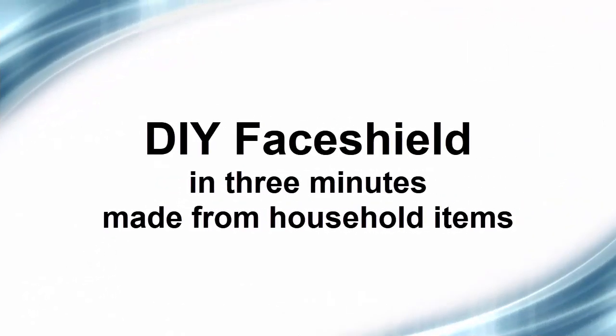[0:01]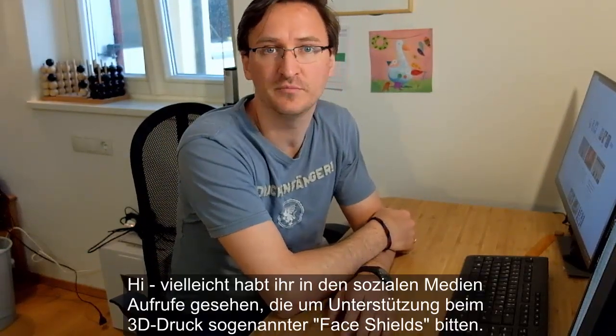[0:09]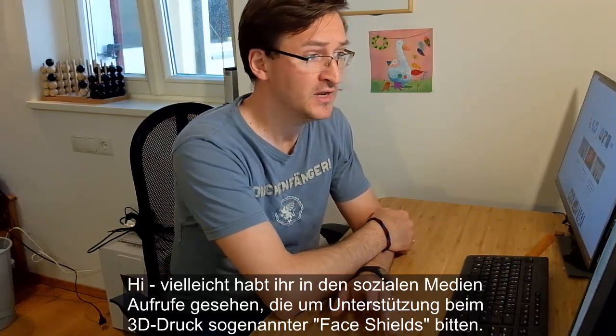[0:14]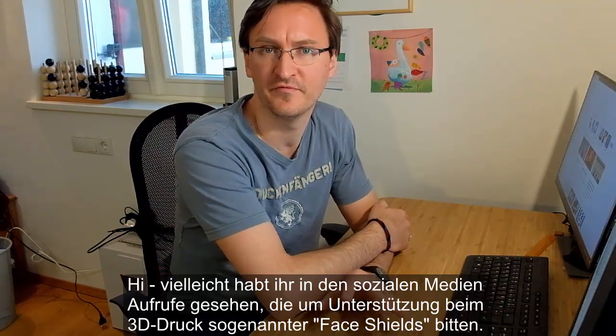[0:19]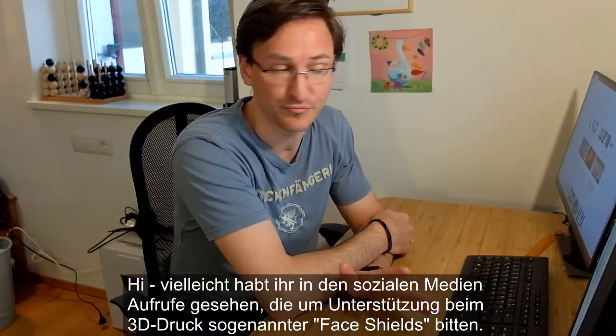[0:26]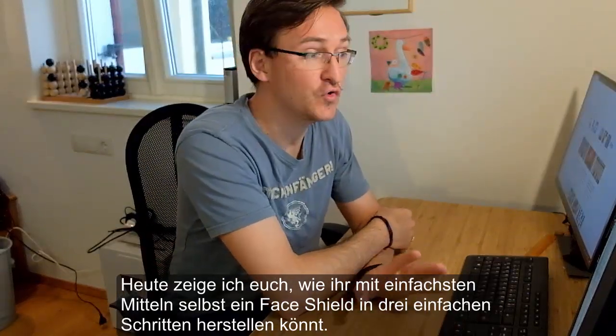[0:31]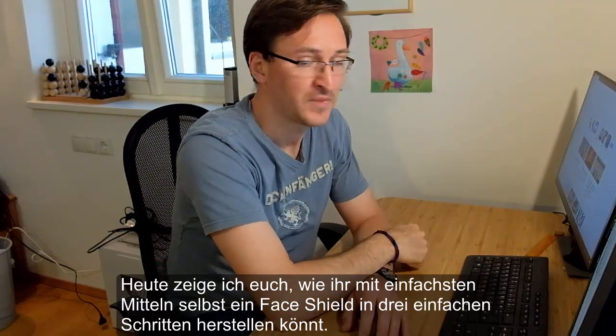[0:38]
Hi. Maybe you have seen calls on social media, on Twitter, on Instagram, on WhatsApp, whatever, that forward messages from hospitals that call for face shields, and usually those calls are for face shields made with a 3D printer, right? Today I'm going to show you how to create your very personal do-it-yourself quick and dirty face shield in just three simple steps. And you can see my result here.
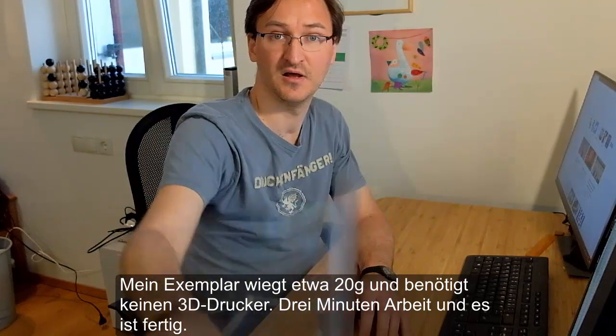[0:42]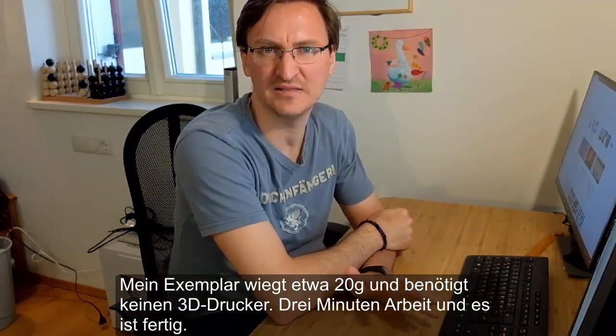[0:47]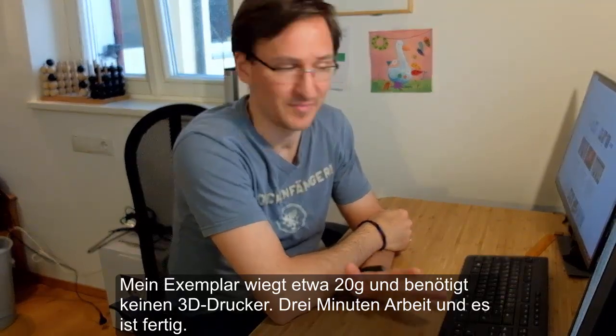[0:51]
It weighs just about 20 grams and it does not take a 3D printer to make, and in fact it only needs about 3 minutes. Well, what do you need for a shield like this?
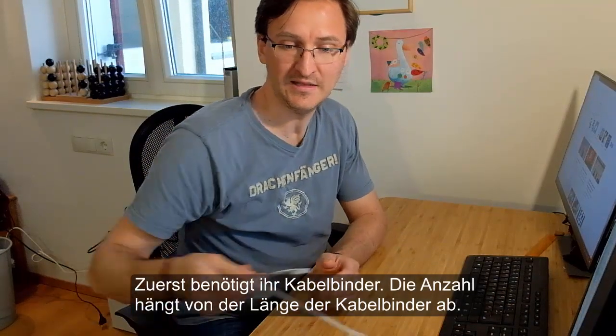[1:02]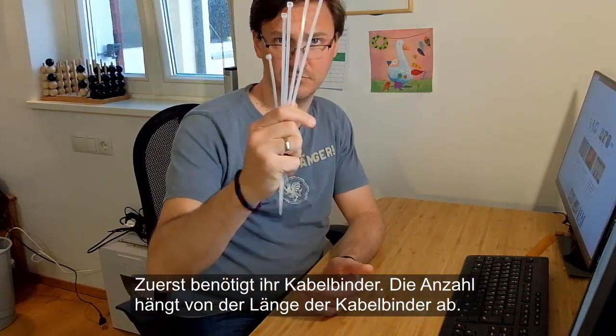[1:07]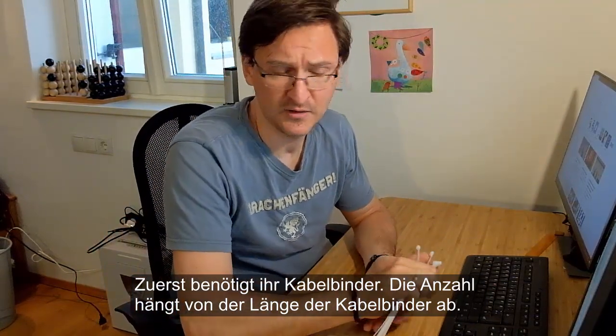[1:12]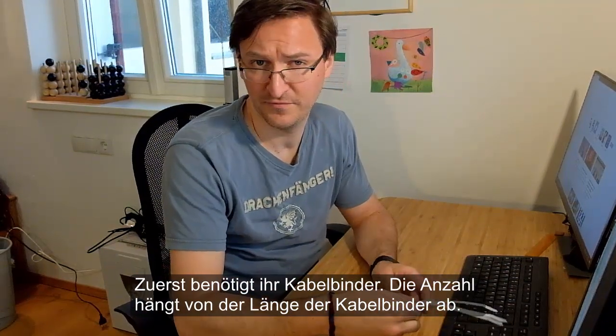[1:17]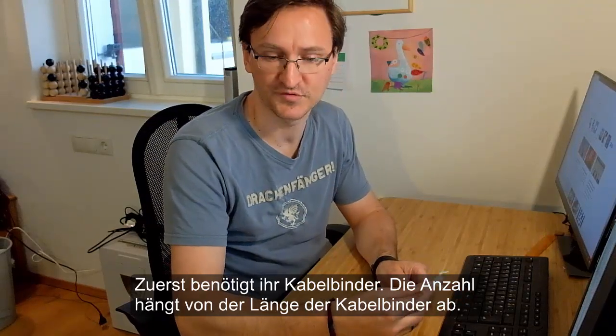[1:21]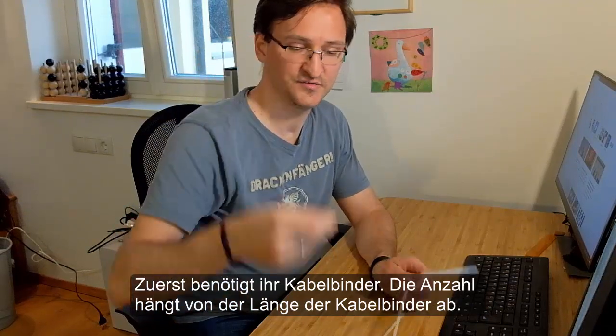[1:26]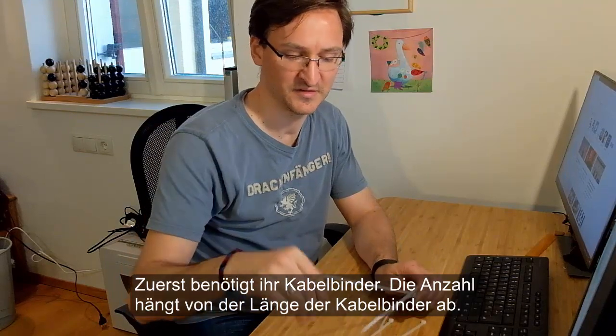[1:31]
First of all, you need zip ties. Depending on how long they are, you can get them in your regular home improvement store, online, wherever. Depending on how long they are, you might need about 5, 6, maybe only 2 or 3. So that's really up to your source where you have them. I have zip ties that are 30 centimeters, so I need to have 4 that are 30 centimeters, and that's why I need 5 of those.
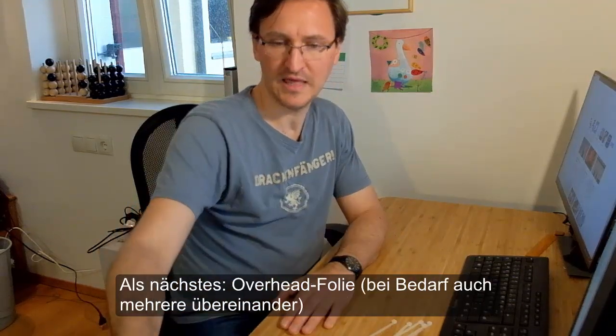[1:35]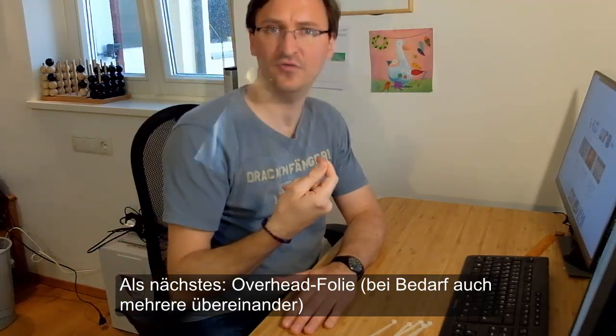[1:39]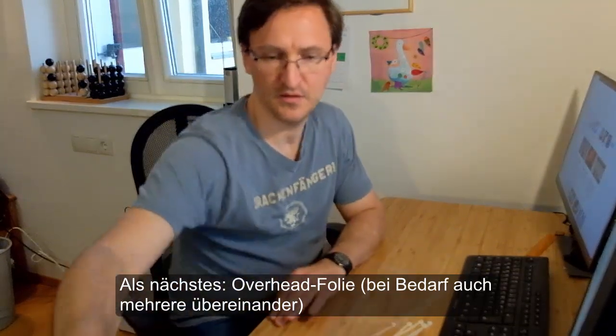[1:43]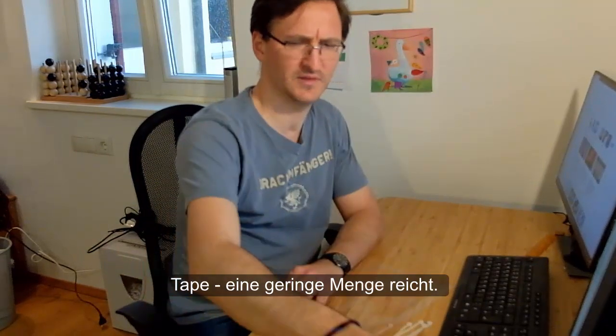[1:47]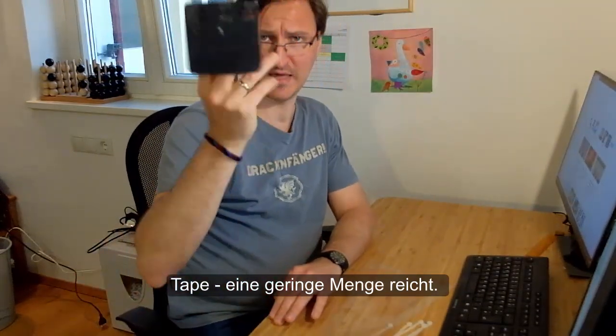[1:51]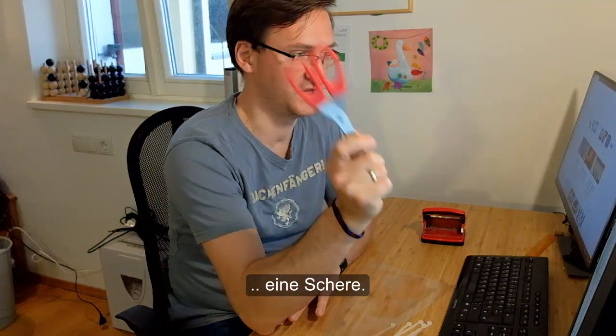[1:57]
Then you need an overhead transparency film. Very simple to get. If you have a printer at home, maybe you also have one of these. Then you may want to use some tape. Don't worry, less is fine as well. You need a standard hole punch, and of course a pair of scissors comes in handy.
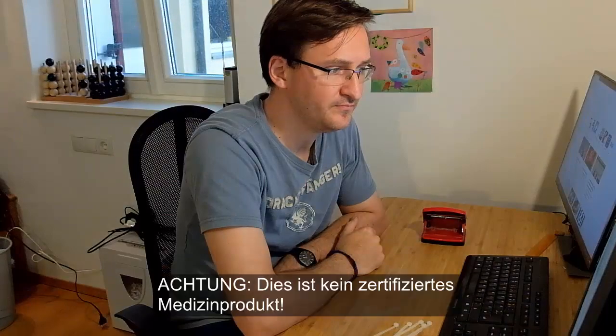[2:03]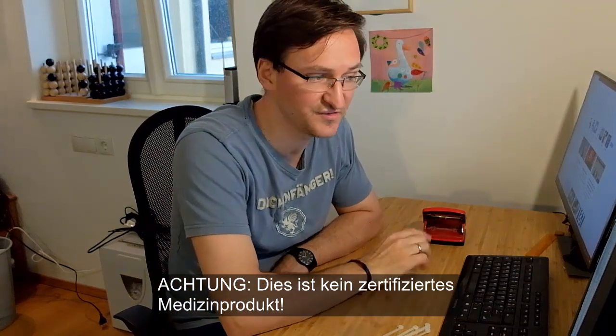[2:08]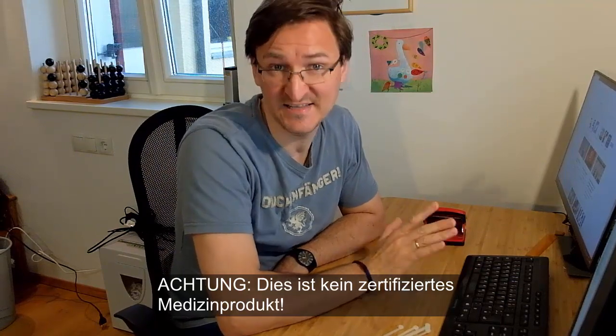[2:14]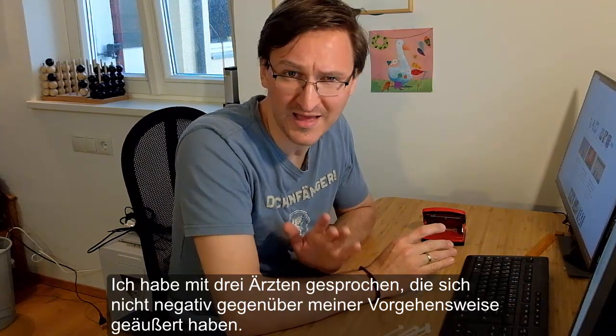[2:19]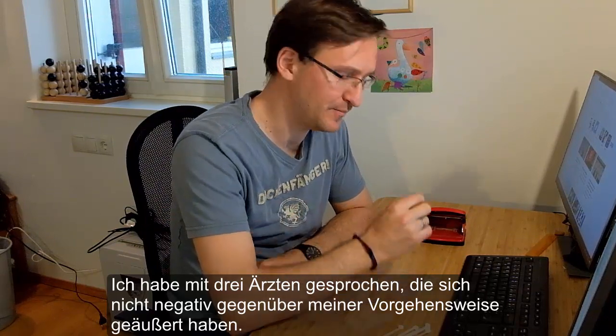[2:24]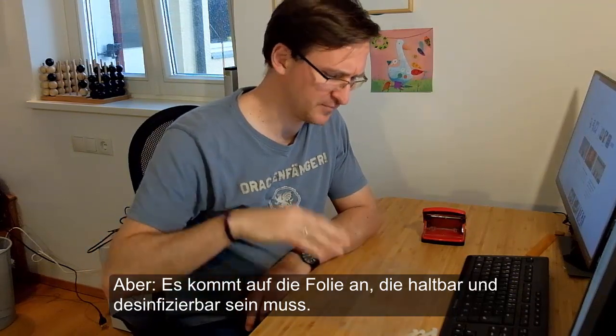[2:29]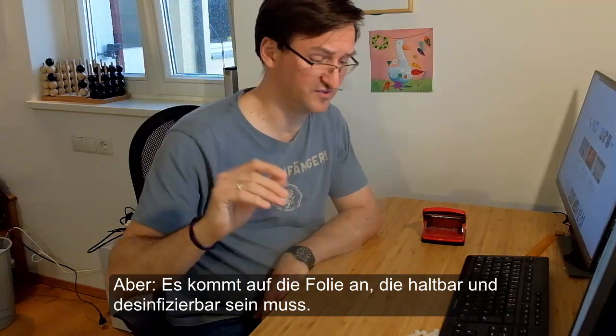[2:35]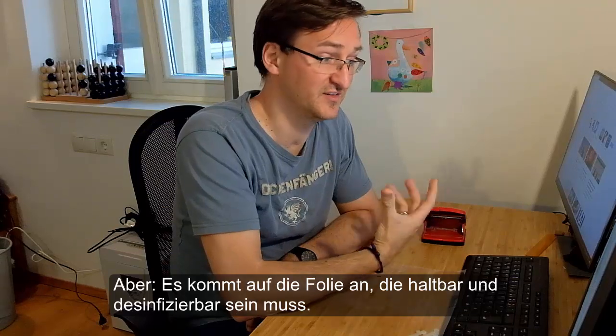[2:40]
So just to be clear, this do-it-yourself product is quick and dirty. It does not meet any industrial or medical standards. And I did talk to 3 doctors about the whole thing. They were not unhappy with the idea. They liked the idea or the concept, but all of them really pointed out it all comes down to the quality of this film. In professional masks, typically PET is used. I don't know what these overhead transparencies are made of, and of course you need to be able to disinfect them, so that is really, really important.
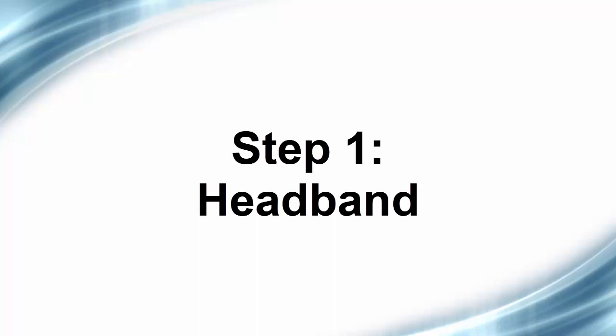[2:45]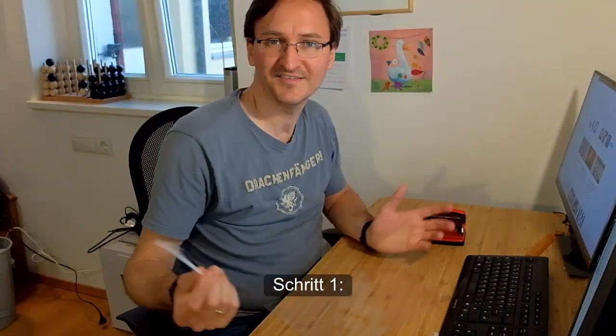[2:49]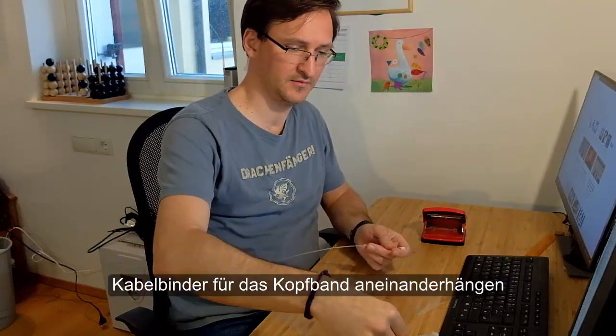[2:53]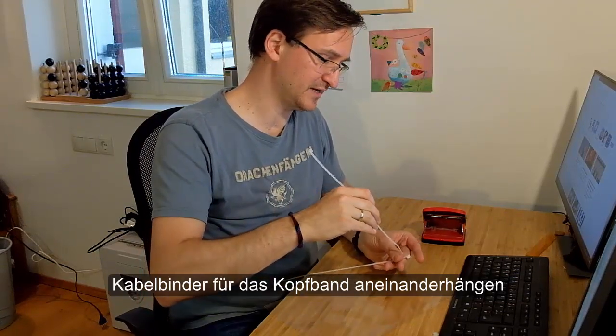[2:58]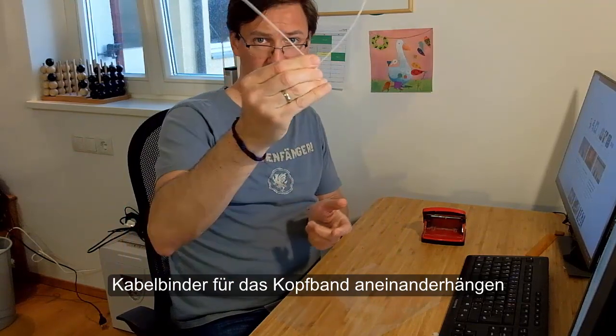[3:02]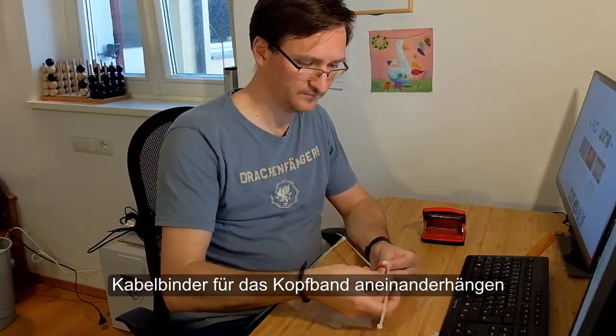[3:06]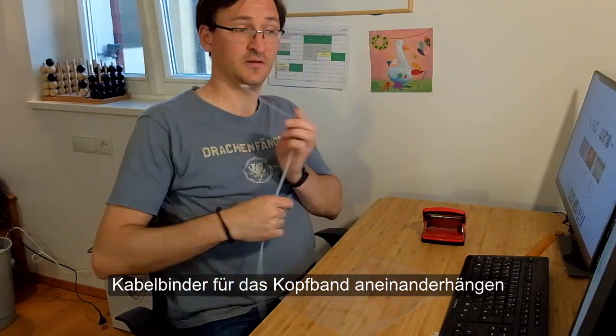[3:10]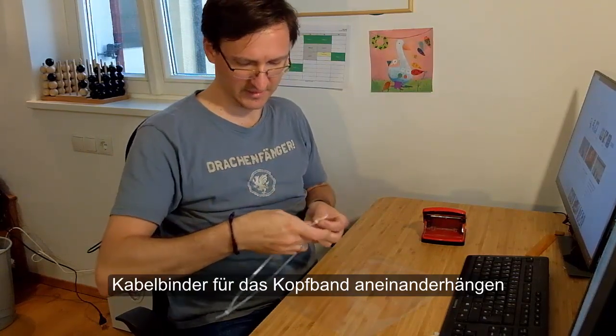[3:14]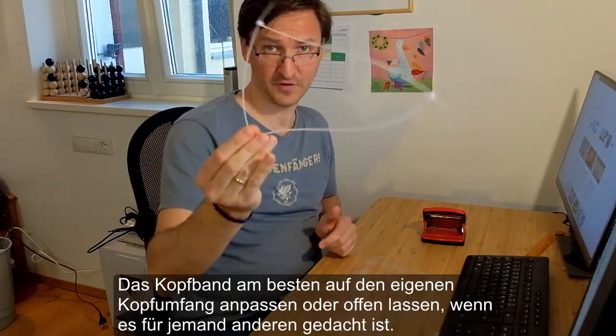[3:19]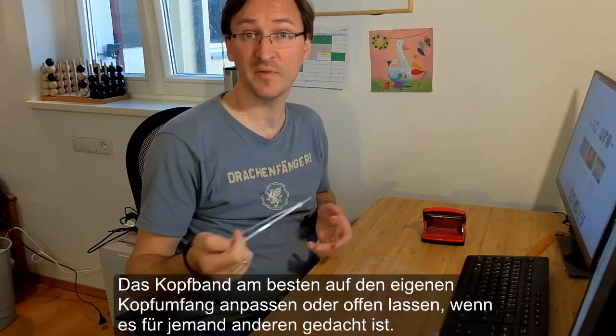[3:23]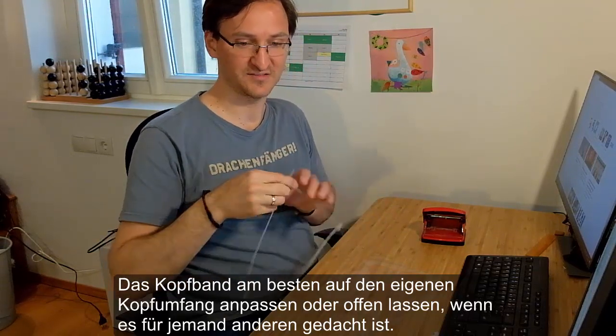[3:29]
So, let's start with step number one. Here, I'm taking the ties here, the zip ties. I'm going to put them together just like this. I have a pretty big hat, so I need another one. And here we are. This is our headband. It looks highly improvised. It is highly improvised. And if you're making it for yourself, make sure it fits your size. If you aren't making it for yourself, but for someone else, you better leave that open so that the person can adjust it to their own head size.
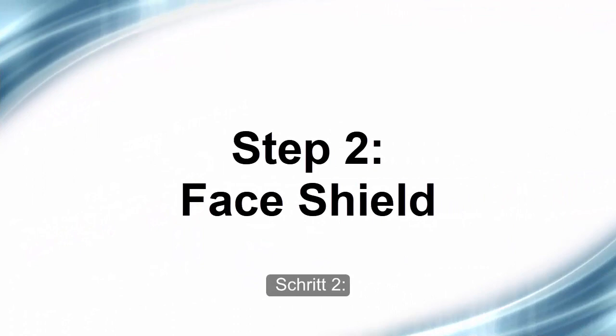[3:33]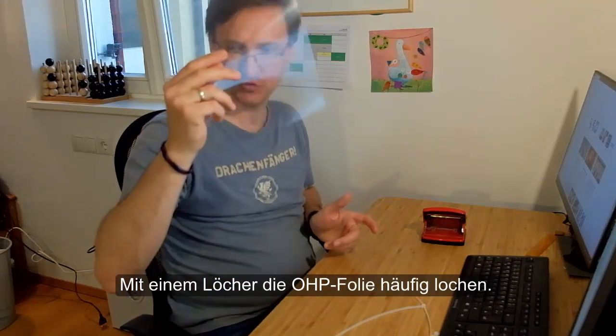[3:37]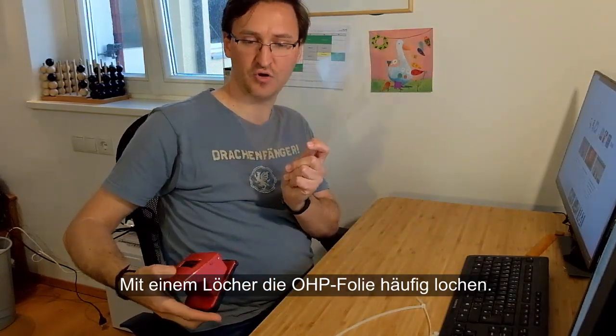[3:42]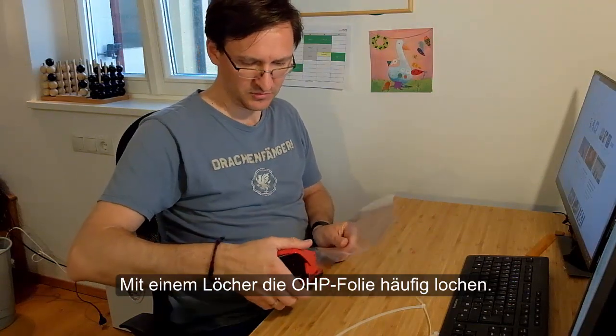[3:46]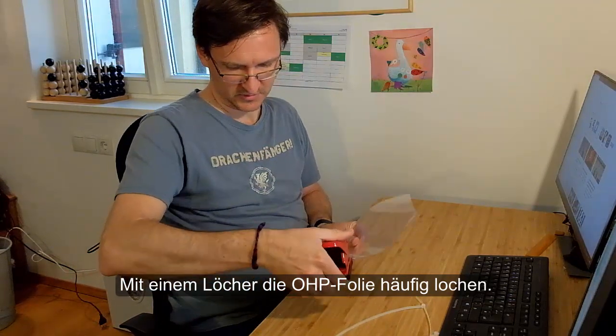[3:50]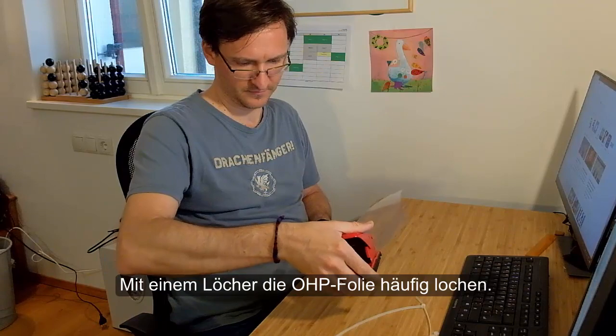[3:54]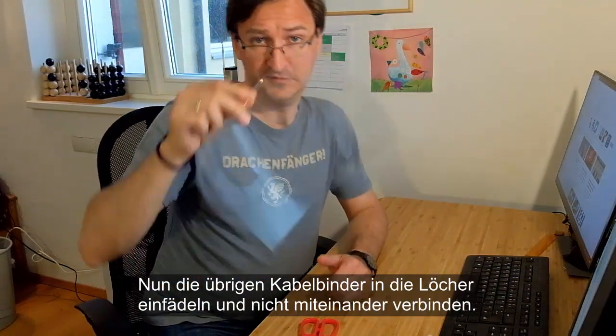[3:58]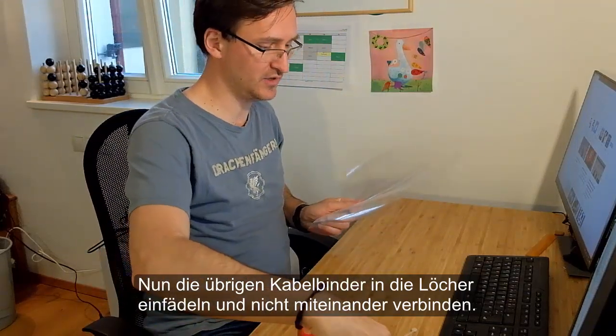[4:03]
So, step number two, here you need to punch holes into an overhead transparency. Don't save on the holes. You might want to have a few of them in there. So my hole punch just got stuck, but that is not really a problem. This is step number two.
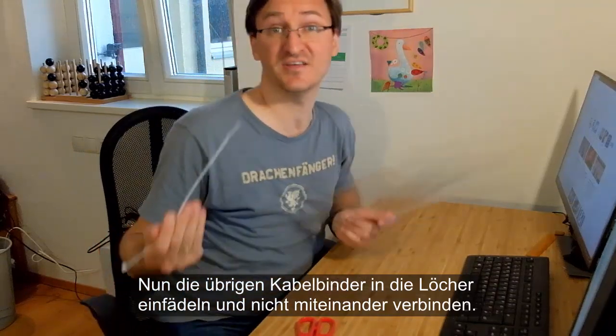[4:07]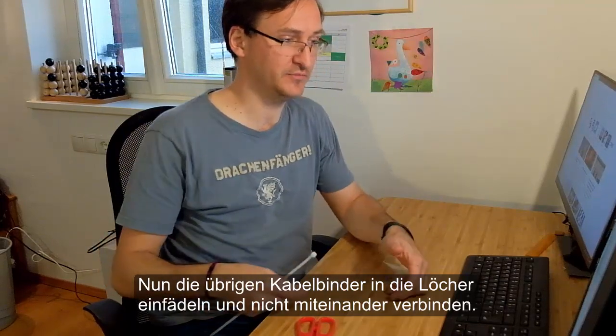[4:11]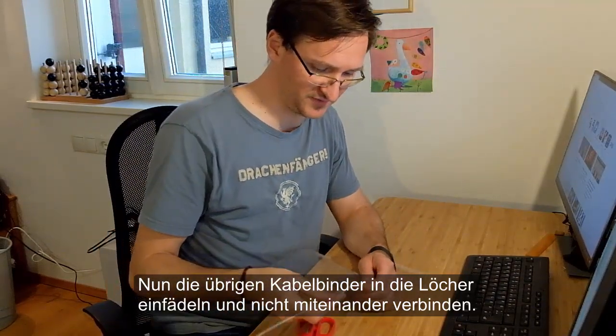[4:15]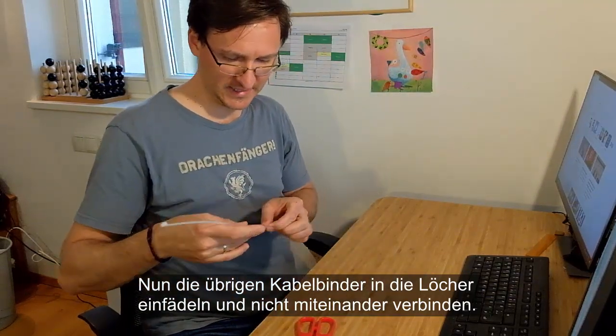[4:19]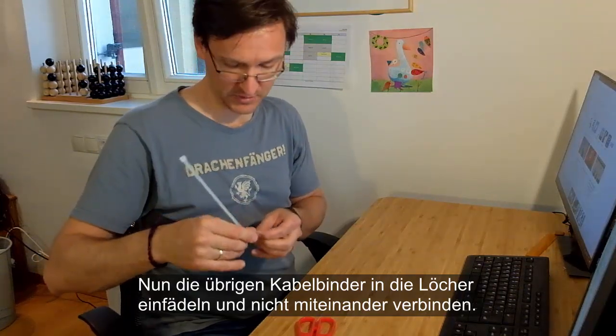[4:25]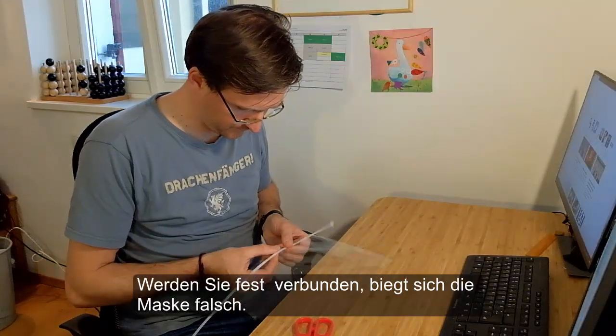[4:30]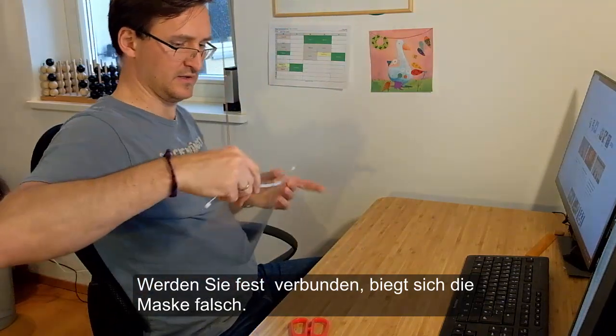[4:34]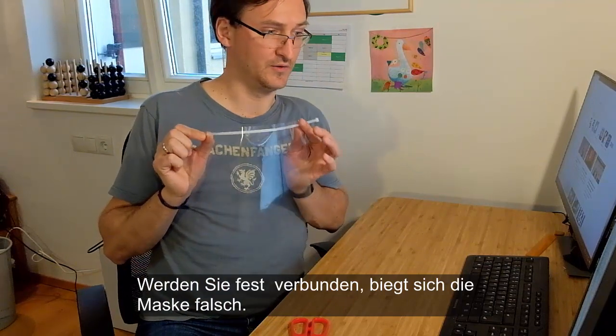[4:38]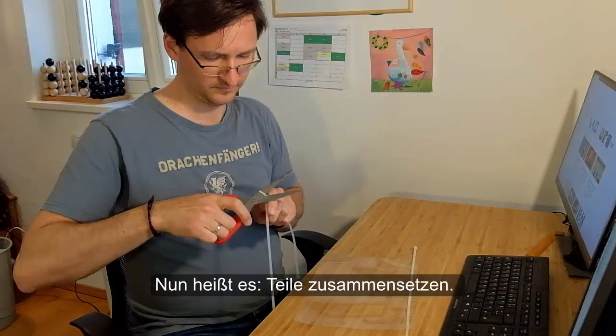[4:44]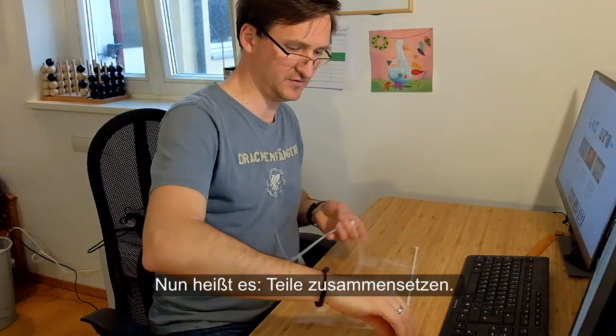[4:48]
You want to prepare the shield now. So we've just punched holes into our shield material. That means we need to tie in the zip ties now. And this is also done quite easily, so it doesn't take loads of time. And really everyone can do that, as you can see. This is our face shield, and you can easily turn it around like that. And now you just need to fit those parts together, like this.
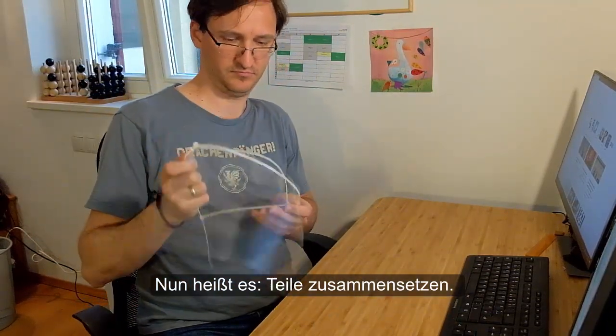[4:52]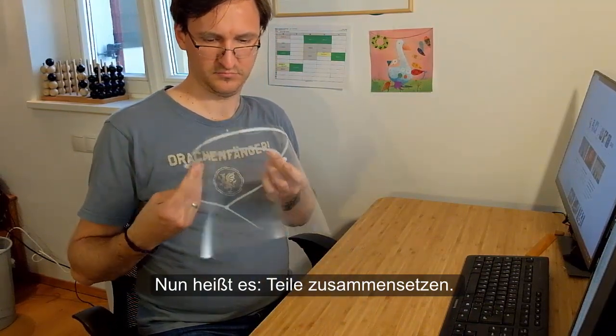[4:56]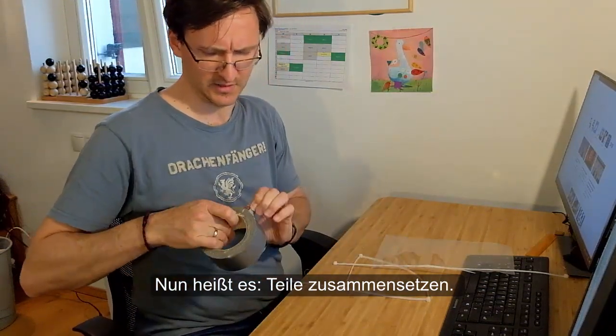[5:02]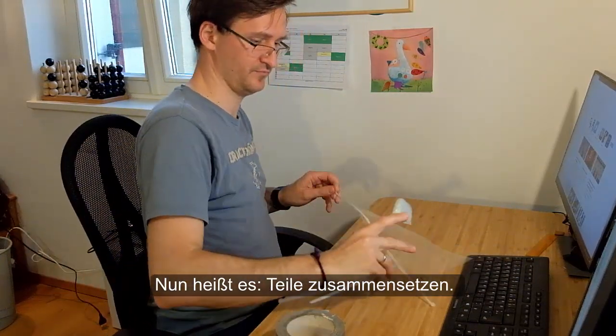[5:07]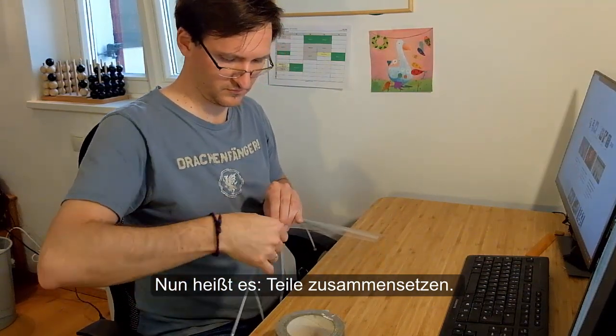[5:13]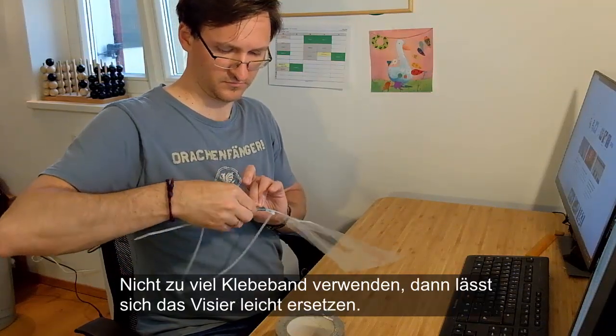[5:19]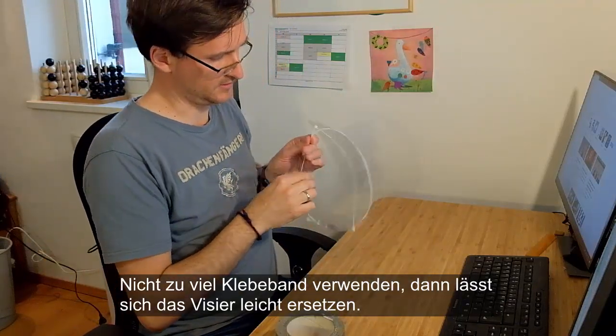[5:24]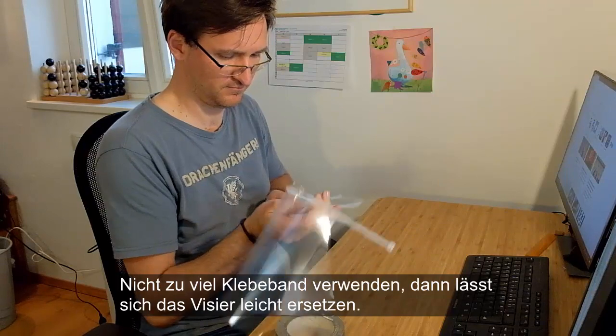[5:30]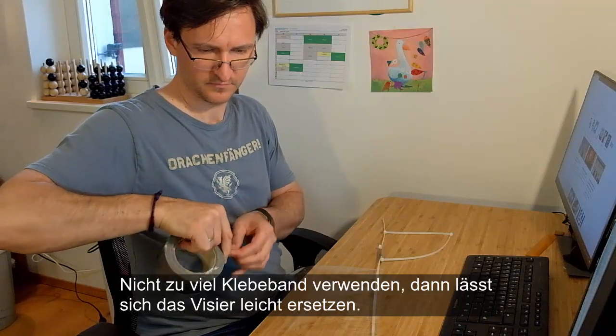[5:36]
Okay, just take a piece of tape. You don't really need a lot. Just like this. So this is really enough. Then you go back here, right? Do the same thing. And here you go.
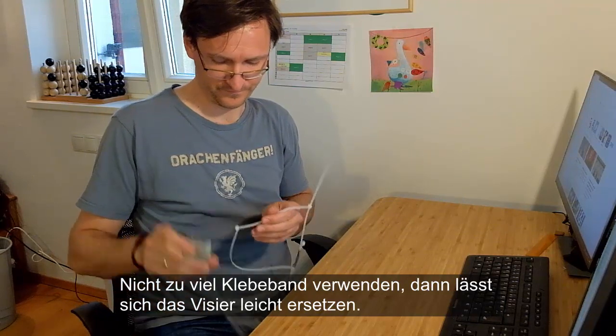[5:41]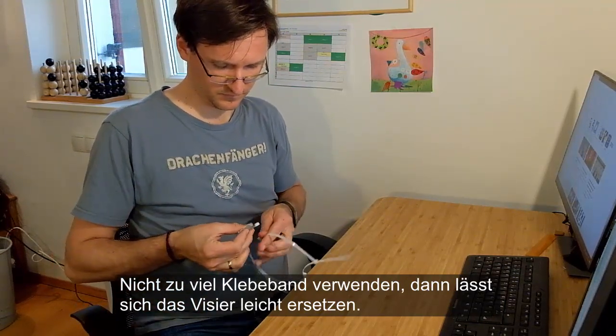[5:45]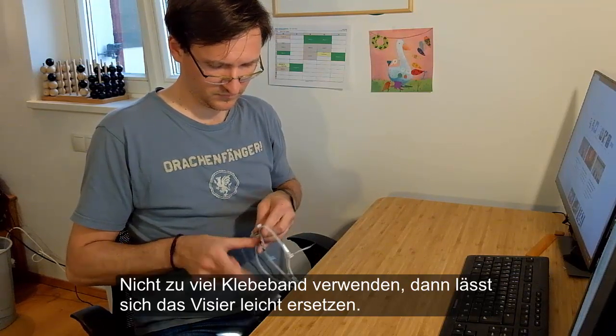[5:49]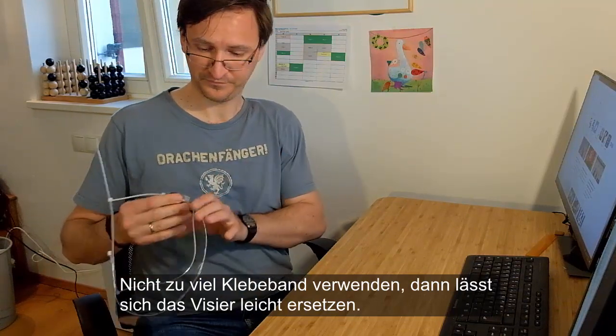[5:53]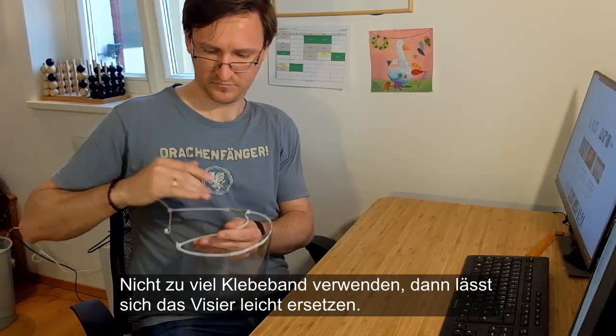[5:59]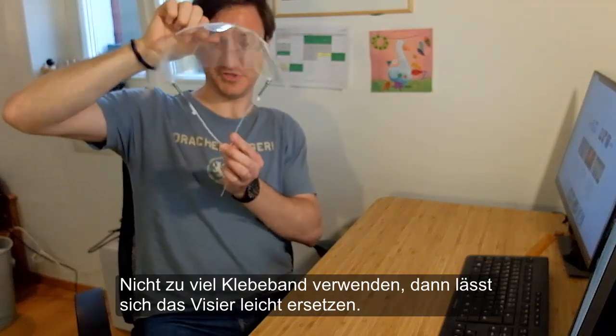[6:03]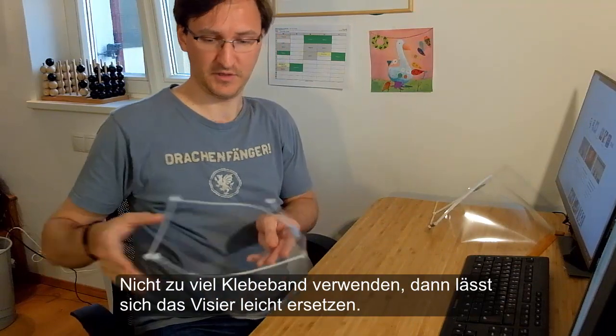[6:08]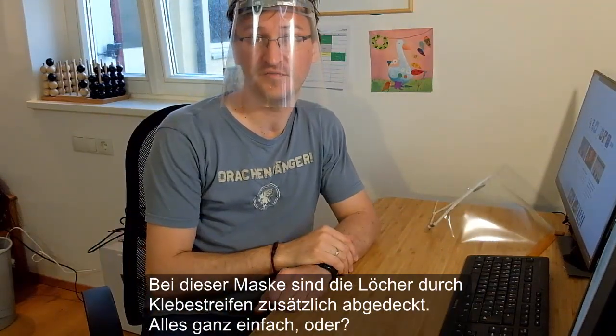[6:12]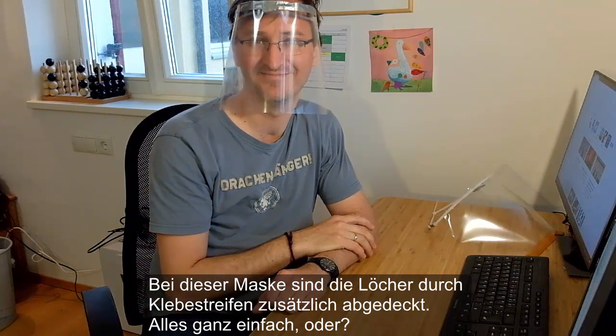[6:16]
And now you have your very personal face shield, which then might come to something looking like this. And here you go. This is your face shield. It's as easy as 1, 2, 3.